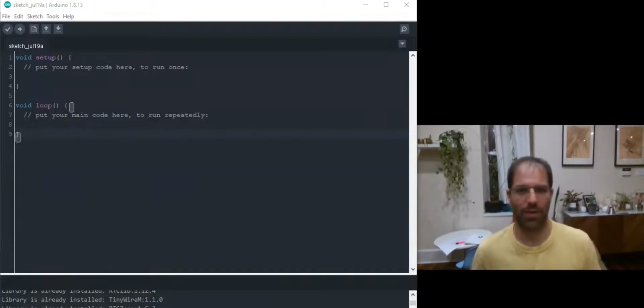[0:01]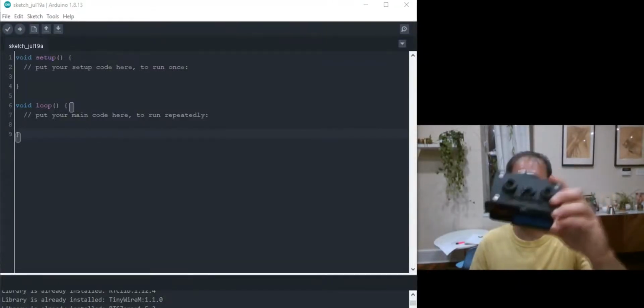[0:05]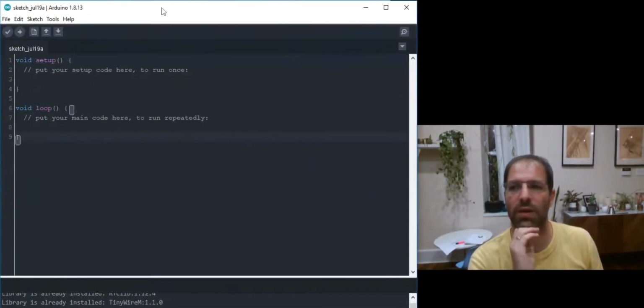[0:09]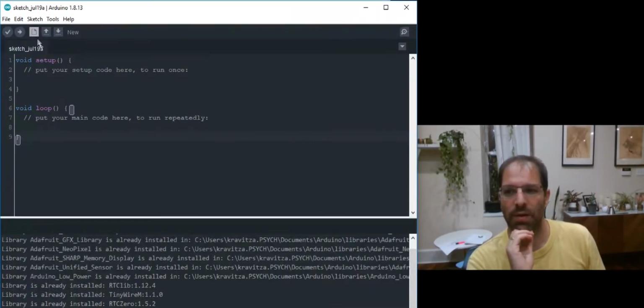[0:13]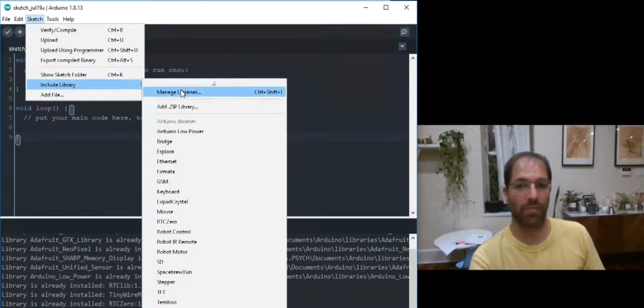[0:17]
Hey, I'm going to show you how to update the Fed3 library and flash new code onto Fed3. So here I'm in the Arduino IDE. This is just the default when you open it up. To get the Fed3 library, I'm going to go to Sketch, Include Library, Manage Libraries.
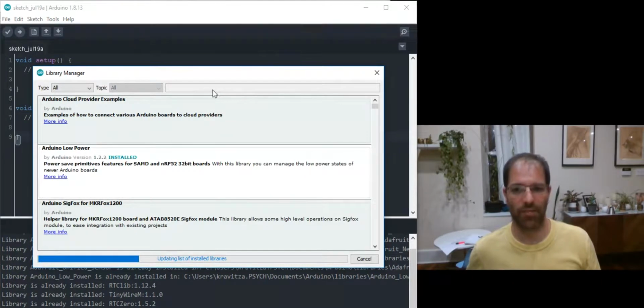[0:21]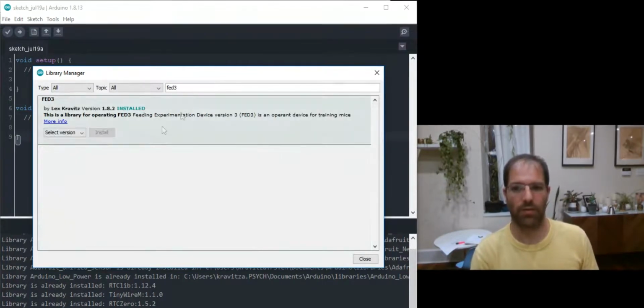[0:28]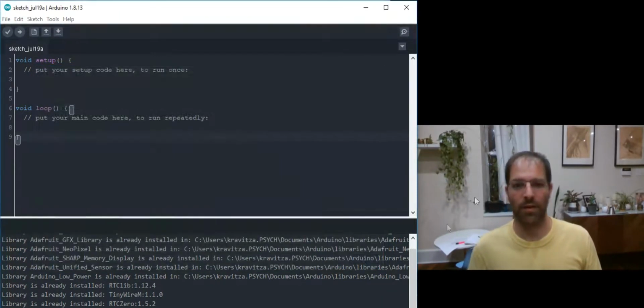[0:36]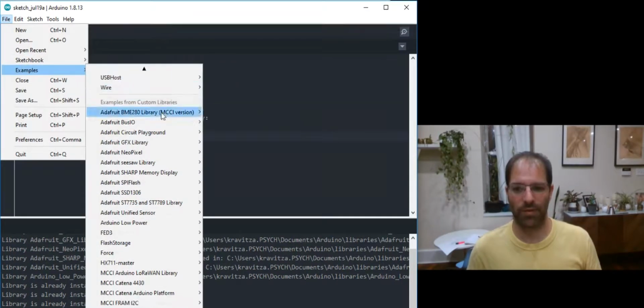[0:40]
This opens up the Library Manager. And here I can search for Fed3. If I search for it, it tells me I'm already installed. If you don't have it installed, you would click this install button, and this will get you the latest version of the library. So once you've got that installed, if we go over here to File, Examples,
all of the libraries for other things will come with examples. Here's Fed3, and there's 4 categories. We have some programs, which are tested programs. We have a clock setting. This will set the time on the real-time clock if you notice that it doesn't have the right time. These are some beta programs, not fully tested, but you can feel free to use them. And then fun stuff has a little game on it.
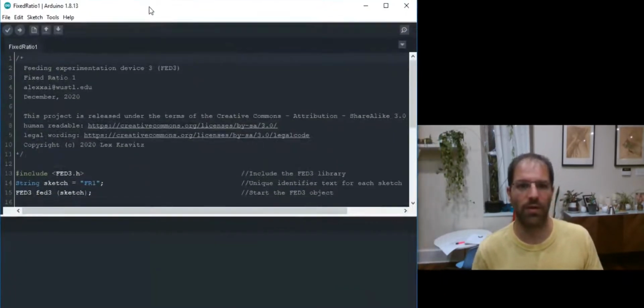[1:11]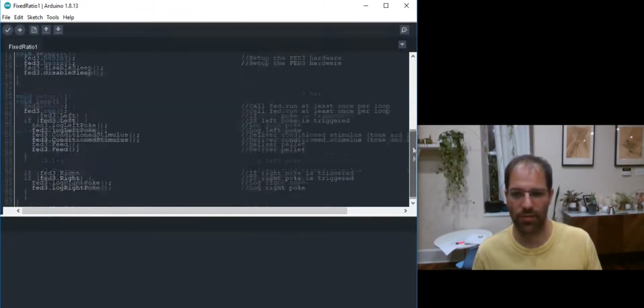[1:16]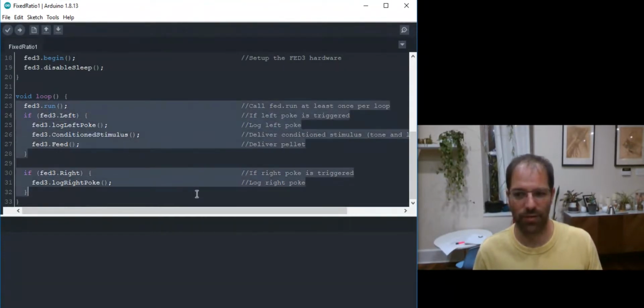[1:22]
So let's test flashing a new program. If I go with, say, fixed ratio 1, a very simple program, 1 nose poke produces 1 pellet. So here's the code. You'll see if you want to scroll down, it's pretty short. The part that you can look at if you're curious about the behavioral code is all in this void loop. This is what's running on Fed kind of continuously when the program's running.
It has a function, Fed3 run, which needs to be called at least once per loop. This updates the display and logs data. We then have an if statement. If the left poke is pushed, we're going to log the left poke. We're going to play a condition stimulus, and we're going to feed, which is to dispense a pellet. If the right poke is pushed, we're just going to log it, and nothing else will happen.
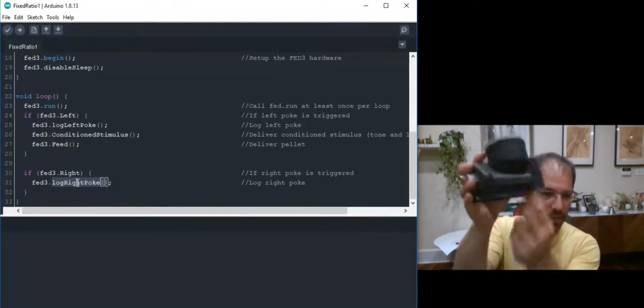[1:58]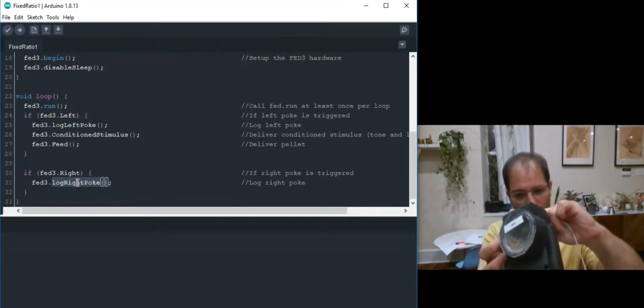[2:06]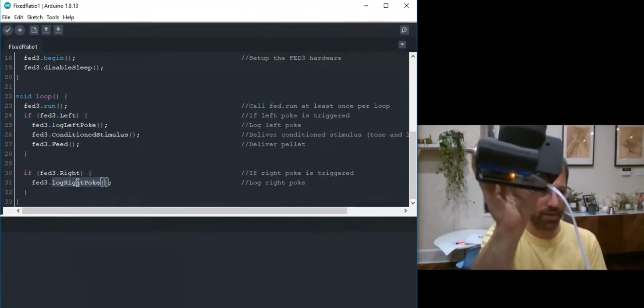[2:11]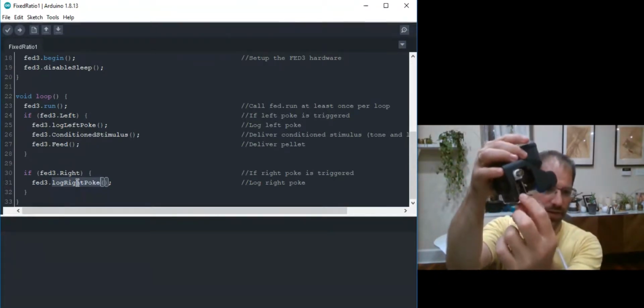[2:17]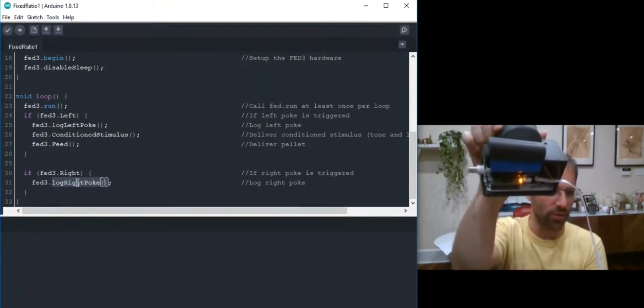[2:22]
So to flash this code onto the Fed, what I'm going to do is plug it in via the micro USB, and we need to plug it into the internal USB port, not this one over here. That's just for charging. So I plugged that in. You may see this orange light turn on. We're then going to make sure that the Fed is in the on position, and I'll double click the reset button, which puts it into a bootloader mode. You can see it's in bootloader mode because this red light will sort of do a breathing.
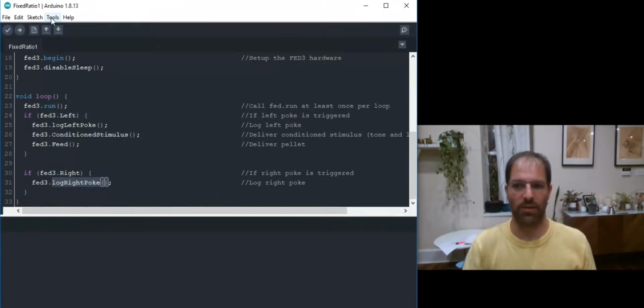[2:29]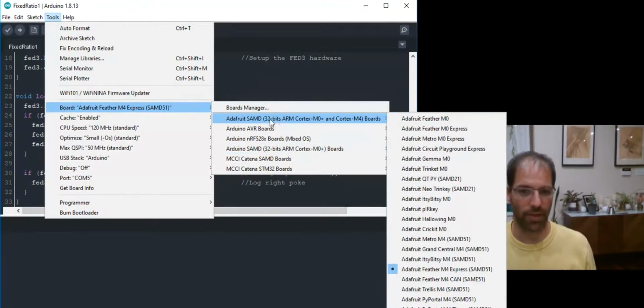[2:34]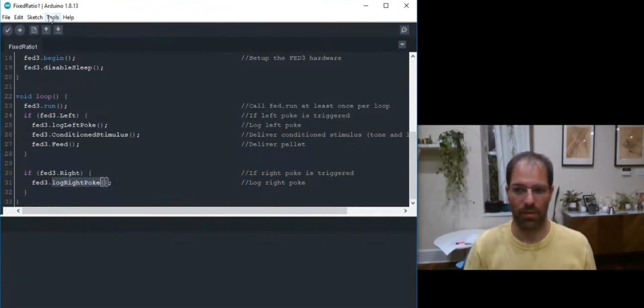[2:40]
Now if we go back to the Arduino, we can go to Tools. I got to pick a different board. We're looking for the Adafruit SAMD Feather M0. And then if I go to port, it should find it for us. So here I'm on COM5. And that's it. We can hit this right arrow. It'll compile, and then it should just upload. Great, and once it's uploaded, you should see the words done uploading and something like verify successful.
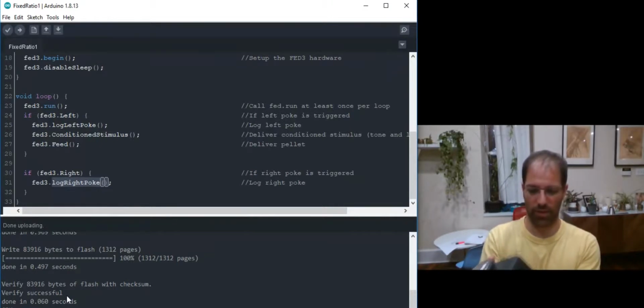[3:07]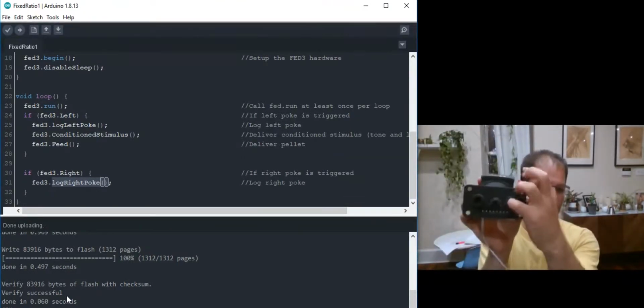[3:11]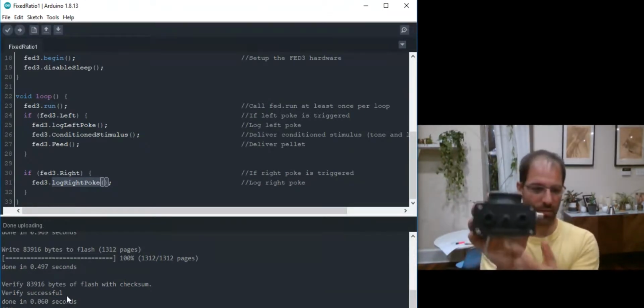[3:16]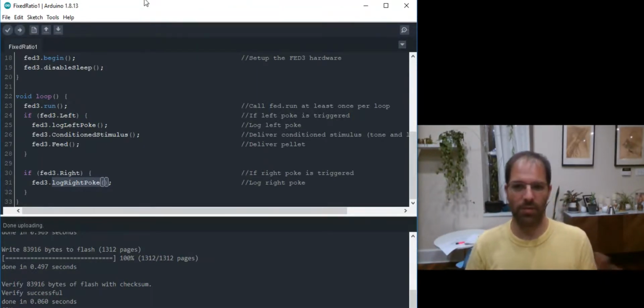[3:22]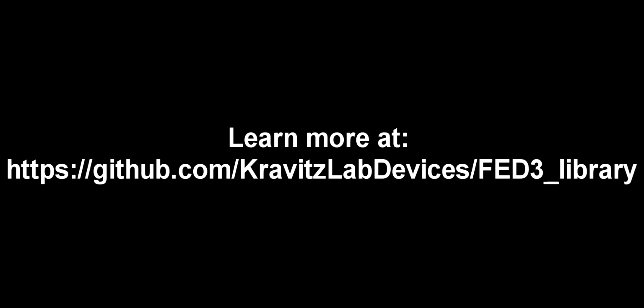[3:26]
And then Fed3 will reboot, and now we have this fixed ratio 1 session where I push once, and I'm going to get the condition stimulus, and it's going to dispense 1 pellet. So that's how you get the latest version of the library and how you flash code.